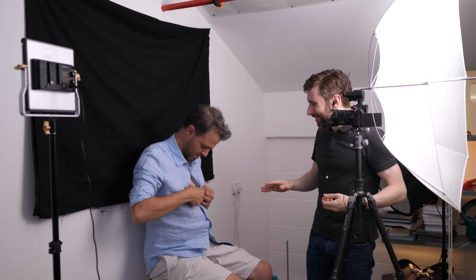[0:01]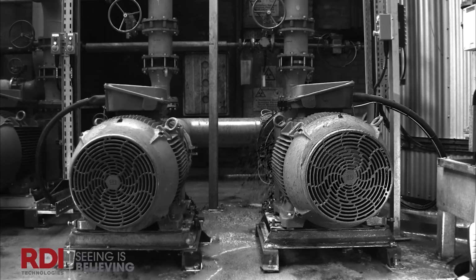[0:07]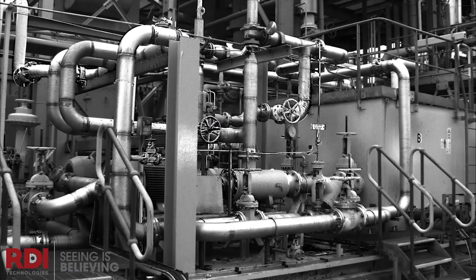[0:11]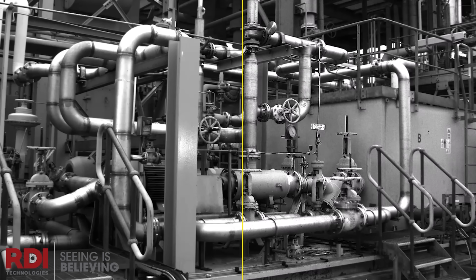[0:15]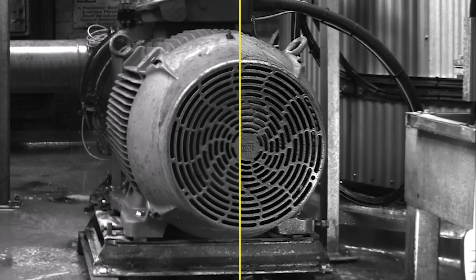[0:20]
Give it 30 seconds. Are we turning it off and turning it on again? We are. Great. A while back, I made a video about motion amplification, a video processing technique that amplifies tiny movements in a video. And look, here's the original video. The human eye can't detect any motion, but it's possible to take those tiny motions and amplify them so they can be detected by human eyes. You can also amplify changes in color until it's possible to see someone's heartbeat. Link to that video in the description.
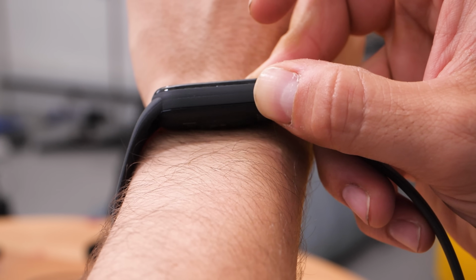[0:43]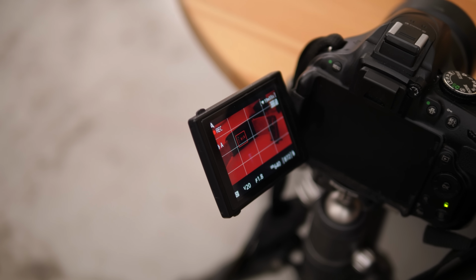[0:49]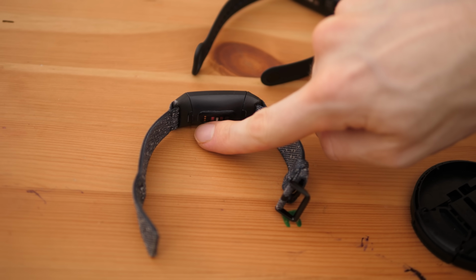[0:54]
But when my friend Andrew Steele saw the video, he said, I've got an idea. Can I strap electrodes to your chest and film it? So he explained the idea further. And you know, smartwatches, they have a sensor on the back and flashing lights and stuff. Well, what the sensor sees when those lights are flashing is incredible. And Andrew wanted to see if we could recreate what a smartwatch does when those lights are flashing, just using a camera pointed at my face and some software that he wrote on his computer.
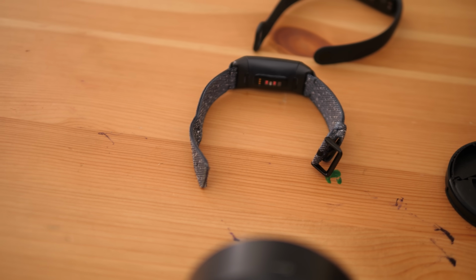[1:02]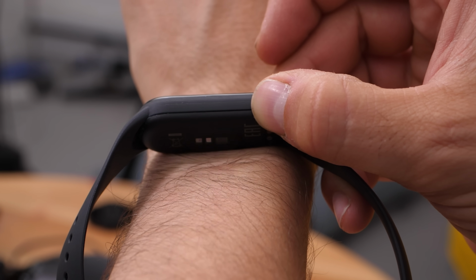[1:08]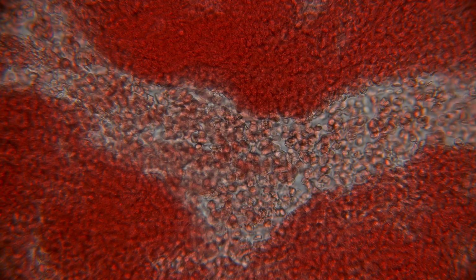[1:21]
The most common light you'll see on the back of a smartwatch is green, and that helps to measure your pulse. But you may also see a red light. In fact, if your watch has a red light on the back, it has another light that you can't see. It has an invisible light on top of that. And the red light and the invisible light together help to measure the level of oxygen in your blood. But let's look at the pulse measurement first, because that's the one we're trying to recreate here.
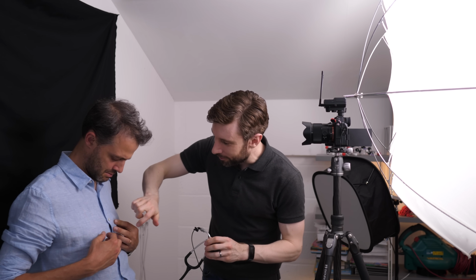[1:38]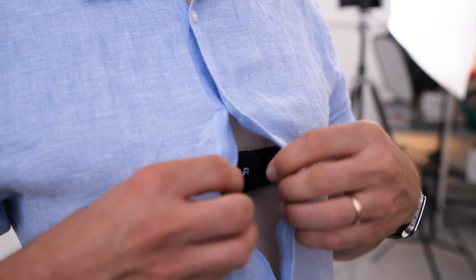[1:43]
I'm going to be filming you. We've got a nice bright direct light source. Oh, it's a doctor. This is her stethoscope. And what we've done is, highly technical, I've just shoved a microphone. And that's going to allow us to listen to the sound of your heart. And also, under here, I believe, we've got a heart rate monitor. Because you're measuring the electrical activity directly, it's going to be much better than the rubbish I get off this camera. So this is to see whether we're any good. But first things first, I need to check whether I've got this in the right place.
Do you know what? I think I've nailed it. I'm going to start recording from that chest strap. I'm going to set my camera going. And we're going to see if we can detect your heart rate using just your face. Try and hold still. Right, that'll do. There is your face.
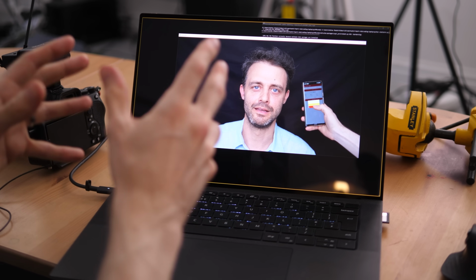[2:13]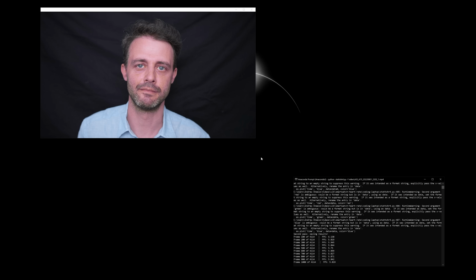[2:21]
It's going through and it's processing this video. So it's measuring the colour of all the different pixels on your face. Your software is trying to find the ups and downs in those red, green and blue channels. And then it's amplifying them. Exactly. And laying it on top. Because you can imagine, this is actually quite medically useful. Imagine you've got a prematurely born baby. It was nice if you could just remotely monitor them by filming them, basically. And obviously, if the premature baby has a beard like this, you would shave it.
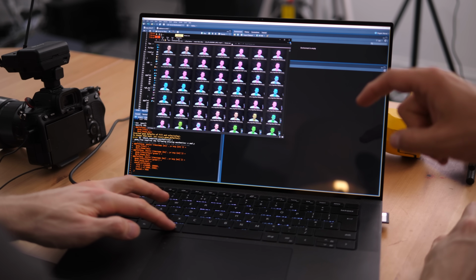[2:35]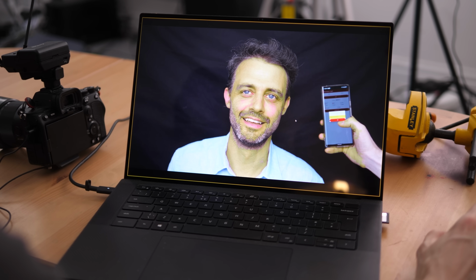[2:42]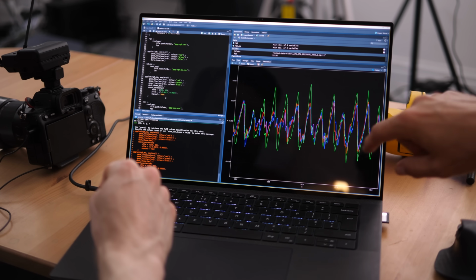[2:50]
Oh, this is cool. These individual frames that you generated using your Python code will then turn into a video. You look a bit unwell in this, if I'm honest. I do, yeah. I mean, I look a bit unwell in this. These are the raw RGB values. I've subtracted that slowly moving background. I've smoothed it out a little bit. And then... Look at that. That's great, isn't it?
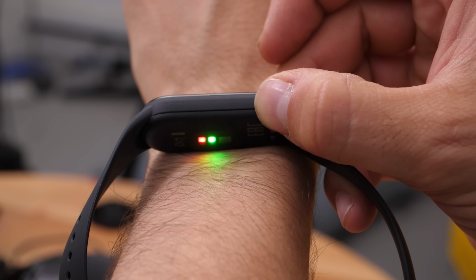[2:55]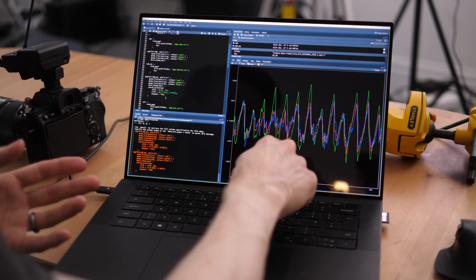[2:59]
What really interested me, I thought one of the reasons they use green lights is because the green signal is the strongest. And I've read this in papers. And as you can see, that probably is true. The green peaks and troughs do tend to be a bit bigger and smaller. But at the same time, there's actually quite a lot of data there in that red and blue channel as well.
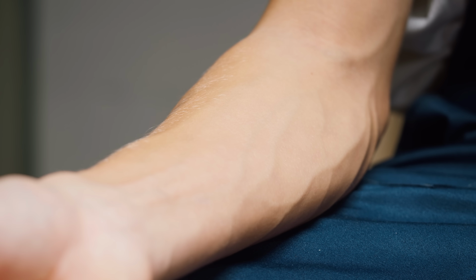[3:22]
A green LED is cheaper than a white LED. But the main reason is actually about how deep these various different colours go into your skin. Red's got a very long wavelength. That means it travels really deep into your arm, for example. And so what that means is that you're potentially getting distracting signals. Yeah, okay. And blue light, by contrast, it's got a very short wavelength.
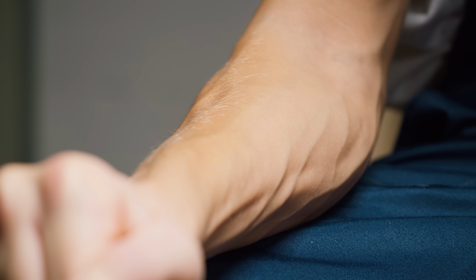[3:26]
And that means it doesn't go very deep into the skin at all. So it might not get deep enough to see the blood. Whereas green is this sort of nice compromise. It goes in deep enough to see the blood, but not so deep. It's basically just detecting muscles or something.
So if you had really sensitive eyes, you'd just be walking around, and people's faces would be getting brighter and darker and brighter and darker. It's how much it's like to be Superman. But that's weird. Yeah, he never talks about it in the canon. You can probably hear it as well. What a nightmare.
Because of that stethoscope, remember that. We've got the sound of the heartbeat as well. So we've got that, that can act as a gold standard and prove that I've not just totally faked this. So here we go, you ready?
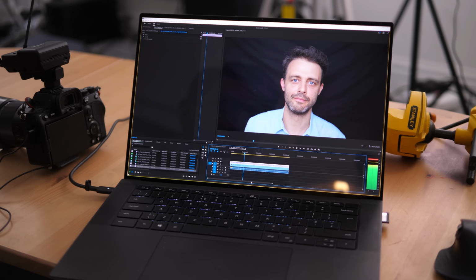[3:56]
Look at that. And what you can see. Oh, and then you get a little twitch, flash green. Which is very twitchy, obviously. Yeah, it goes wood-dum, wood-dum. Yeah. That's not bad, is it?
The heart rate that you can see on my face seems to match up with the audio of my heart that you can hear. You can see why this reminded Andrew of the motion amplification video. The difference is we're using the whole face to work out what the pulse is and then converting that pulse data into a colour overlay so we can see what's going on visually. We also took an ECG using that strap around my chest as an extra test to make sure that this thing was really working.
It's got two little contacts on your chest here and here. And it's measuring the voltage across that. It's basically the voltage, you know, from one side of your heart to the other. And when you made me lick them, you weren't just being weird. No, because it's really important for the electrical contact. Yeah, sure it is.
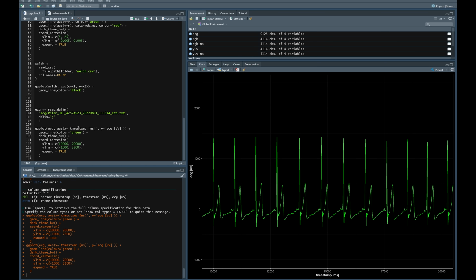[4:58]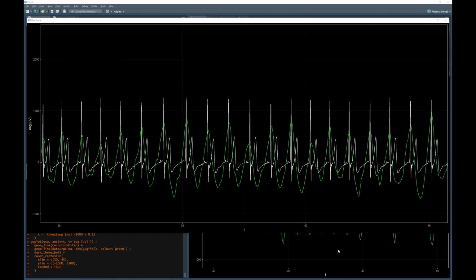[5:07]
Absolutely beautiful. It's so clean. Got these massive big spikes. Then we can just overlay this lovely, clean, beautiful ECG trace with that RGB video data. So what you can see is that ECG... well, basically, I can believe those peaks line up, can't you? Yeah. That's not bad, is it? I reckon we nailed that.
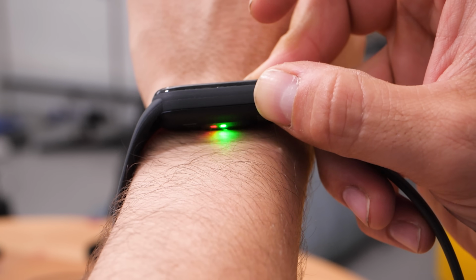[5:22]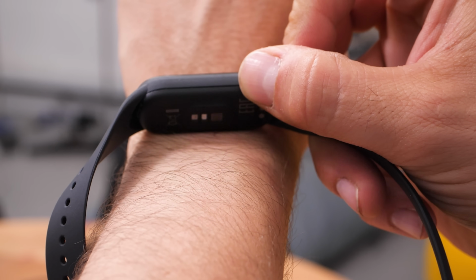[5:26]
Here's a question though. We were using a constant white light to illuminate my face. But watches use a green light that is flashing. Why is the light flashing? They want to flash the green light on. They take a measurement with their little one pixel sensor. And then when the green light's off, they can then measure the ambient light. So the surrounding light.
Let's imagine a worst case scenario. You're in a disco. Disco lights are flashing on and off. They don't want that to distract their measurement. Yeah. They need to subtract that flashing disco light. And therefore, by turning off that green LED, they can subtract the constant ambient light around you.
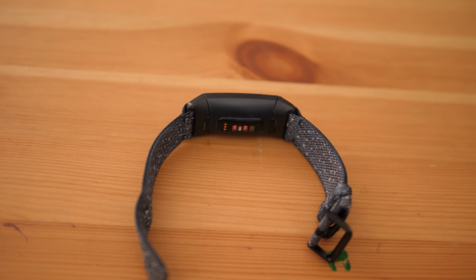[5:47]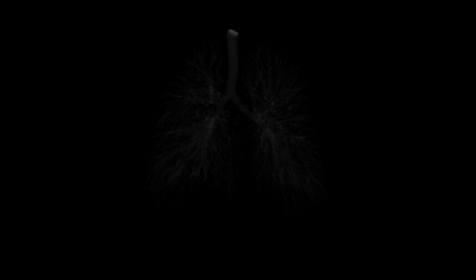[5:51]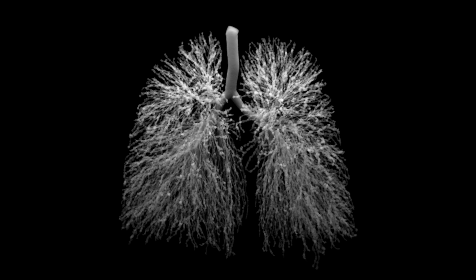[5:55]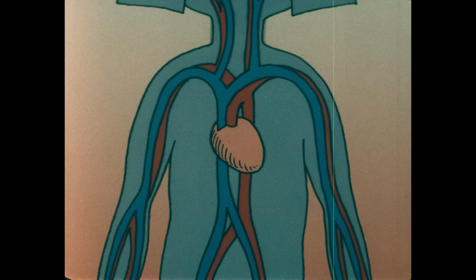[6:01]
So the other thing these watches can do is they can measure your breathing rate using your heart rate measurement. So when you breathe in, your lungs get bigger, obviously. Yeah. And that means the space inside your chest for your heart gets a little bit smaller. So if it wants to pump the same volume of blood around your body per minute, it's going to have to beat a little bit faster. And what you can do is you can watch for the changes in heart rate over time.
And that allows you then to extract the breathing rate. So that's what the green light is for. It's your pulse, and as it turns out, your breathing rate as well. But what about the red light? Well,
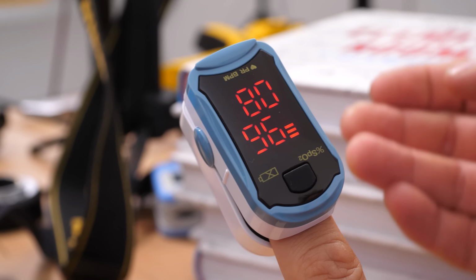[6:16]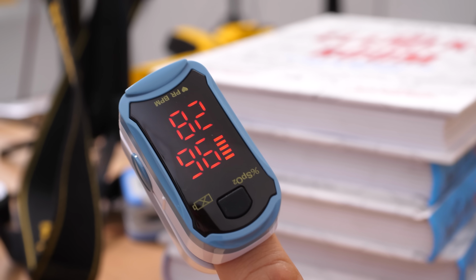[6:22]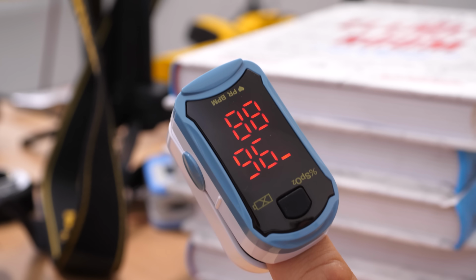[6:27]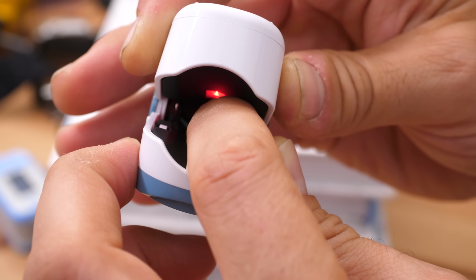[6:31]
you may have seen one of these before. It's a pulse oximeter, a device that attaches to your finger and it will measure how much oxygen there is in your blood, how saturated your blood is with oxygen. And your smartwatch is doing the same thing. They both do it with the help of a red light. The reason they use a red light is because the more oxygenated your blood is, the more red it is.
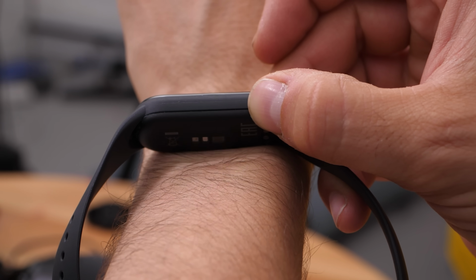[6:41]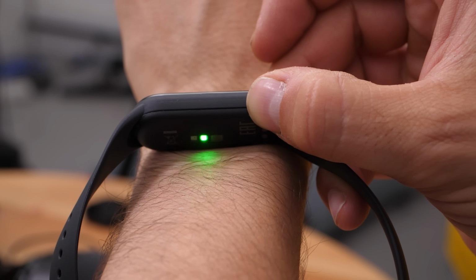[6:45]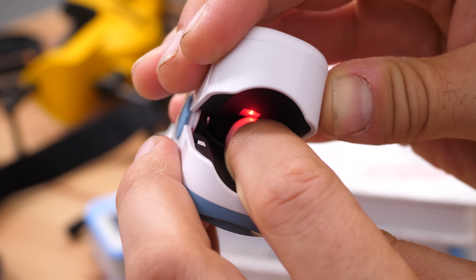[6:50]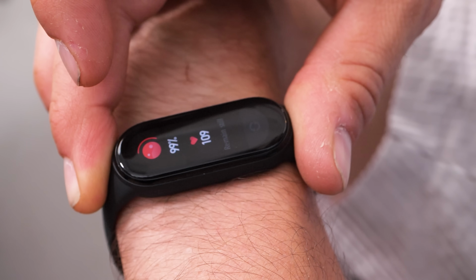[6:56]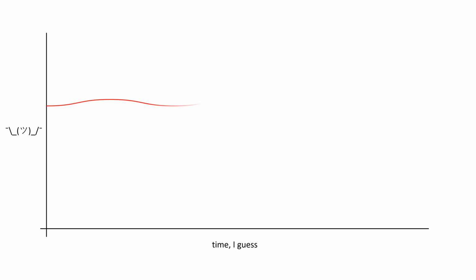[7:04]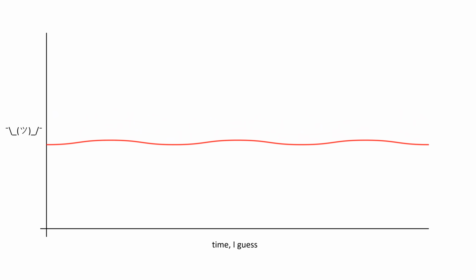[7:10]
So the higher the line is, the more oxygenated your blood is. And the lower the line is, the less oxygenated your blood is. But here's the problem. That line will also go up and down depending on how thick your veins are, how much ambient light there is around you, how thick your skin is, how close the sensor is to one of your veins. So there's actually no way to look at this line and know how much oxygen there is in your blood. So how do we fix that?
Well, the trick is to use a second light that's a different color. So different, in fact, that you can't see it. It's infrared. That's the invisible light I was telling you about at the start. This footage is from an infrared camera. So the flashing light you can see here, you can't see with your own eyes. And here's that infrared light on the pulse oximeter.
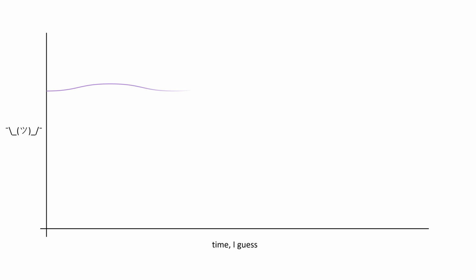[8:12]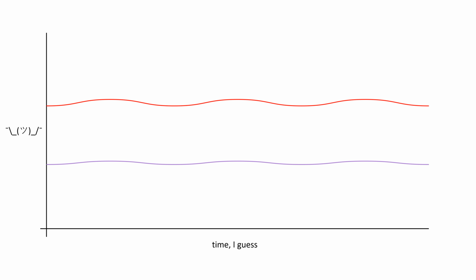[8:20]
You remember, I said that blood gets more red the more oxygen there is in it. Well, the opposite is true for infrared. The more oxygenated your blood is, the less infrared it becomes. So if you were to plot what the light sensor sees in infrared, it would be up here for deoxygenated blood and down here for oxygenated blood. So if you were to look at both readings together, this is what oxygenated blood would look like. And then as you slowly remove oxygen from the blood, one line would go down and the other would go up until they cross over.
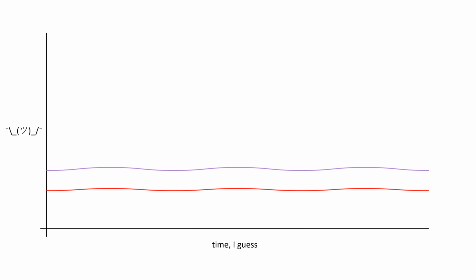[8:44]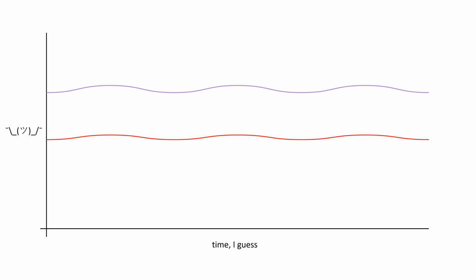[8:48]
And so now you don't have to worry about ambient light, where exactly the sensor is pointing on the wrist, all that sort of stuff. Because look, as these external factors like ambient light vary, well, these two lines move up and down, but they move up and down together. The relative height of the two lines stays the same. So that's the thing you measure. And that's the thing that can tell you how much oxygen there is in your blood. How clever is that?
Now, because blood is typically 90 something percent oxygenated, and because oxygenated blood strongly absorbs infrared light, with an infrared torch and an infrared camera, we can see what your smartwatch sees. So this is what your smartwatch sees when it looks at your wrist. Of course, it's a one pixel image that your smartwatch sees. We've got many more pixels here, so we can pick out the detail of the veins and arteries. How cool is that?
But even freakier than that, look what happens when I shine it into my head. It's absolutely terrifying.
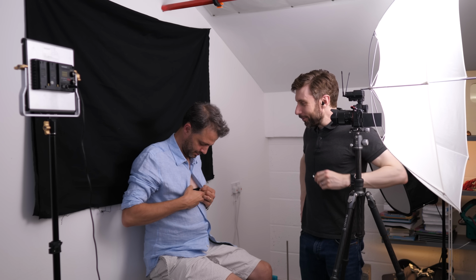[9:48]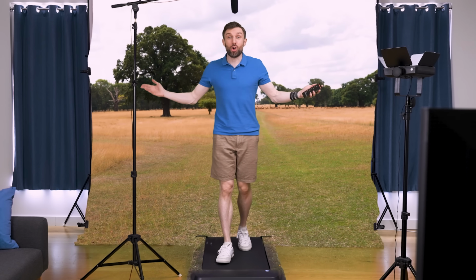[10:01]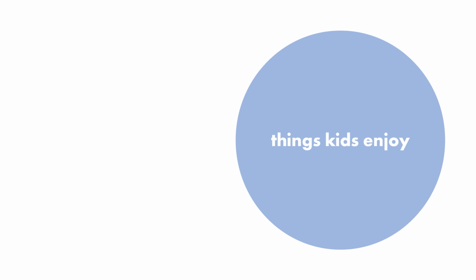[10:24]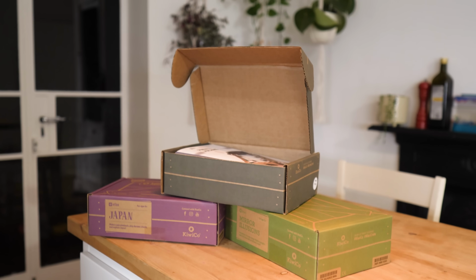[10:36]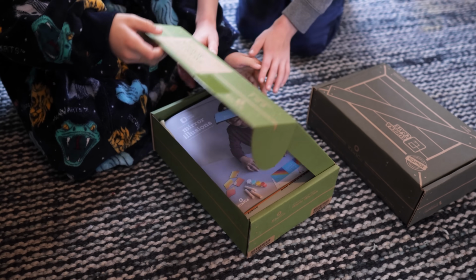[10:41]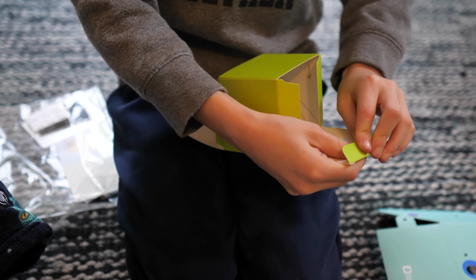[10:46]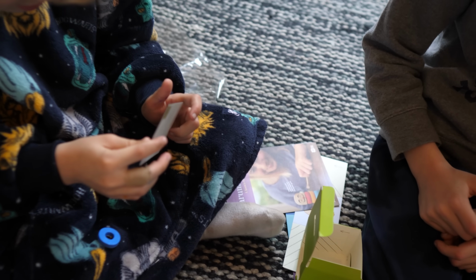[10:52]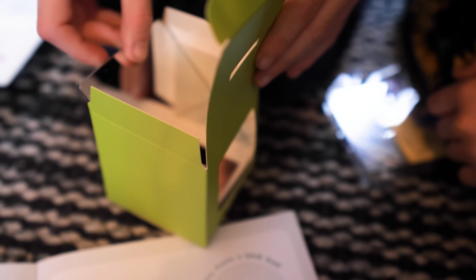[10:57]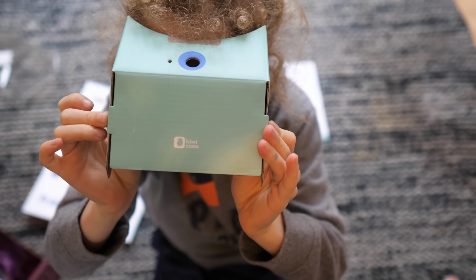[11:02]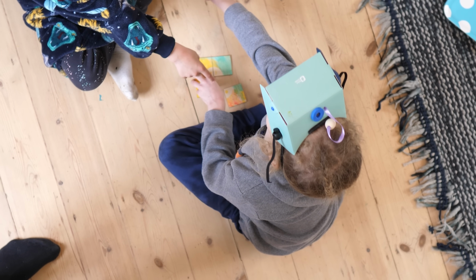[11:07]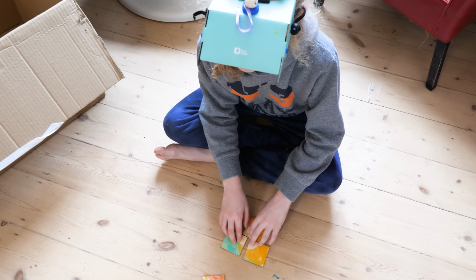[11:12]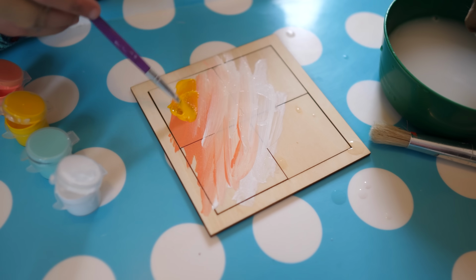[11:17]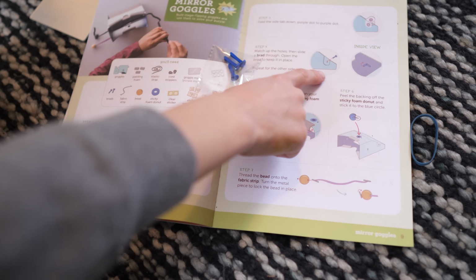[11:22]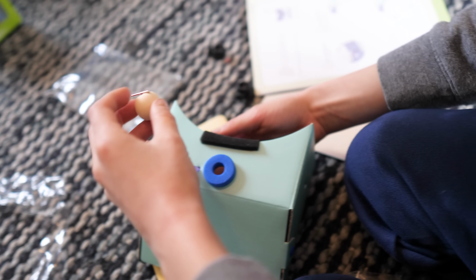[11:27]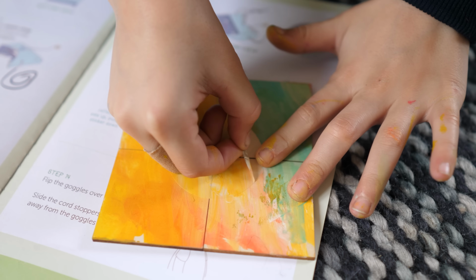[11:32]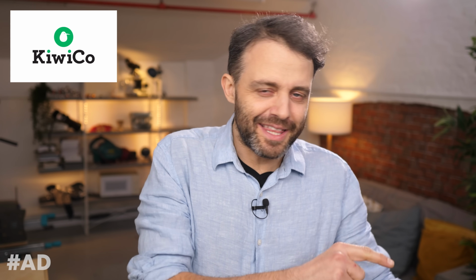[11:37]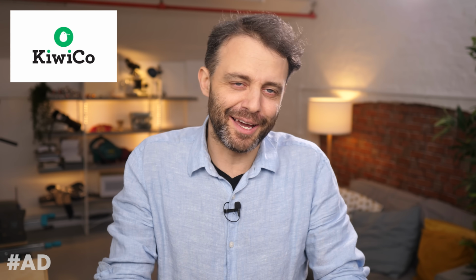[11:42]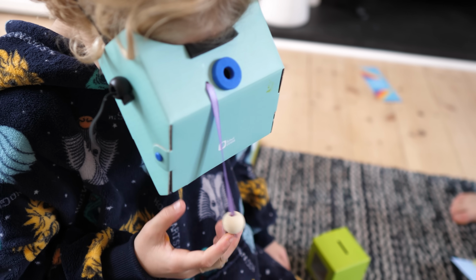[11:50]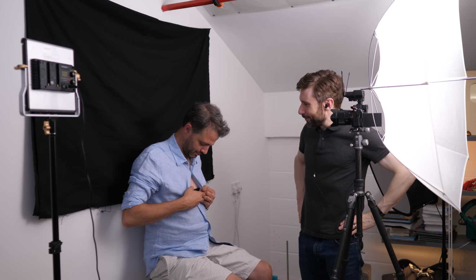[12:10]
Now I'm listening to your abdomen sounds. I'm hungry, okay? It's mansplaining my heart. Not that sort of doctor. No, no, but you've got a PhD. I've got a PhD. No, show off. I get emails from people sometimes saying professor. Professor Mould. Yeah. Totally. Thanks. Professor of YouTube.
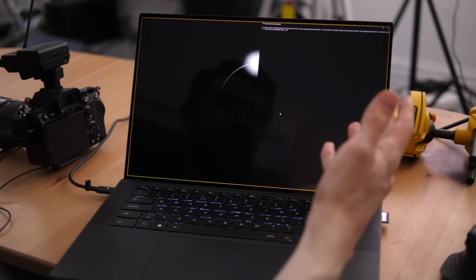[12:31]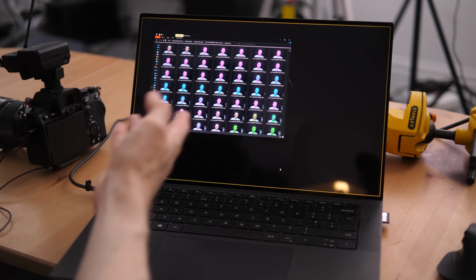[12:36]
Could you make the text smaller though? Because it's almost, I mean, it's a waste of space, isn't it? It's going to be beautiful, isn't it? I mean, look at those colors. It's just, I mean, it looks horrendous. Look, Smurf. Yeah.
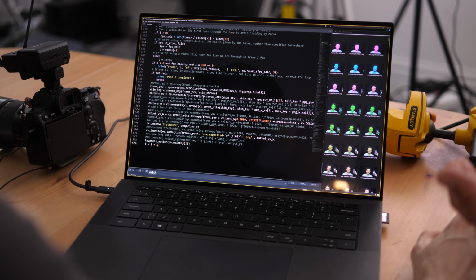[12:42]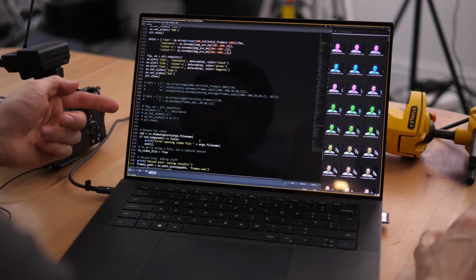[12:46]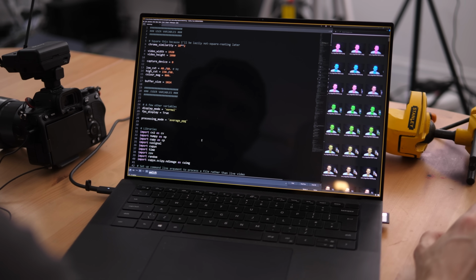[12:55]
Showing your code in a video is just asking for code review in the comments. It's an absolute nightmare. What is all this commented out nonsense? What are you doing? Why have I, I mean, why have I written all these functions that I never use at the top of the file? Oh, it's self-documenting. It certainly is, yeah, yeah, totally.
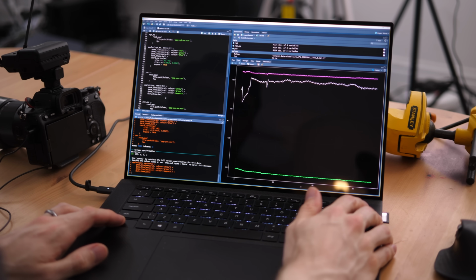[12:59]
So this is a picture of... It's not a picture, it's a graph. I know you're a nerd, but that's not a picture. That's true. It is a graph. And what we're looking at here, yeah.
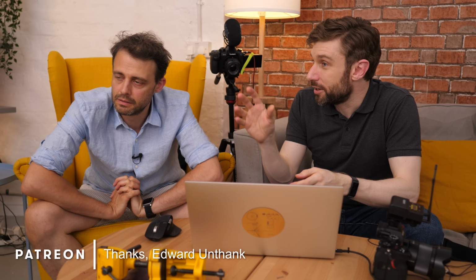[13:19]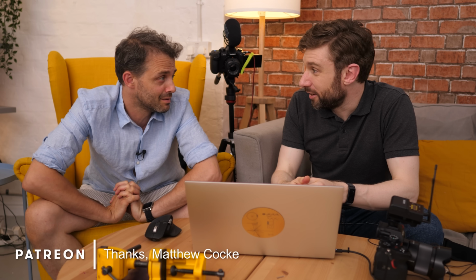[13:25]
So you run at a very steady pace. I mean, I guess most people do. I don't know if I'm, am I the Terminator? Yeah, it is. I'm a bit freaked out by how robotic you are. This wasn't a perfectly controlled experiment. You had a scary guy just out of shot. There was, I don't know why, well, it's because while you were filming, I suppose. So yeah, you had to be there, didn't you? Yeah, yeah, it was very intimidating. So...